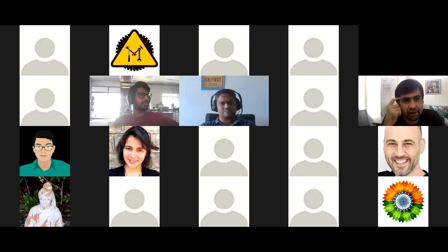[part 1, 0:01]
They could ship out is 220 volts, 50 hertz, and then they have the G threading. What threading do you guys use there? Well, there's really no standard, but plumbing is all still imperial, so anything from quarter-inch to 1 inch onwards. Imperial is still pretty much standard over here.
All right. You guys have somebody taking notes over there? I think hopefully this is being recorded. And Vaibhav, Richa, someone writing down stuff? Yeah. Oh, okay, good.
Anyway, on chat, I posted a link to the gas compressor that we have a local source for. Yeah, it's good to get local sources for sure.
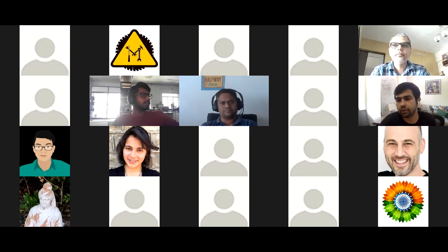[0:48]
One thing I do want to mention, we've been doing this for a while, so a lot of times people come in and try to make modifications as builders and tinker around. I'd recommend you follow the same designs we have, since anybody who has tinkered and adjusted has had some issues. Then you can modify and adjust from there. What comes up a lot is aluminum sieves versus PVC. I've run the calculations. PVC is actually cheaper, even with the labor cost of making them.
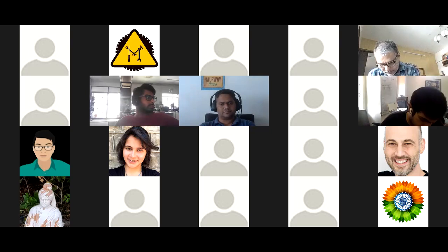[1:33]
Doing extruded aluminum takes a while, right? The adhesive that we recommend in the BOM, if you go to the Oxikit website and click on bundle, there is a downloadable BOM that has links to all of the different products. The Gorilla Glue, the adhesives are very important, so use the same exact ones that we have in there. They have a water-based adhesive. It's basically a safer style adhesive.
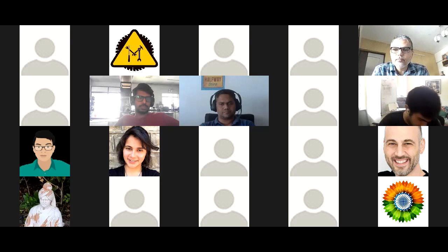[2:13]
The other thing I would mention is, when you're making the sieves, make sure that you vibrate the sieves, and I will share a link to how to make a vibrator using an old tire and a little concrete jack thing, which will help a lot. That's extremely important. You want to compact the sieves. The compression springs are also important: use 50-pound compression springs, and there's a video on how to make the components in there. I have updated the frame, and I think I posted the video in there.
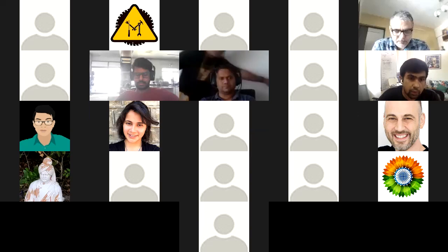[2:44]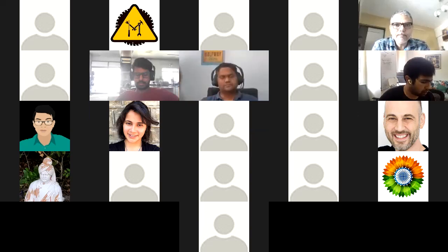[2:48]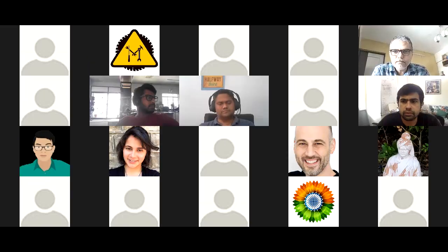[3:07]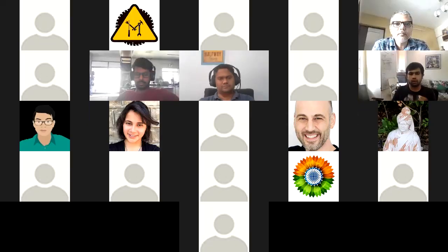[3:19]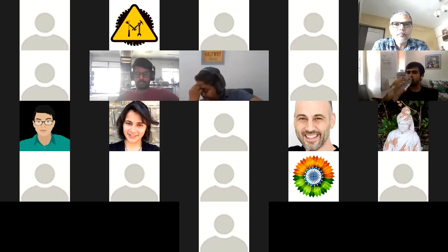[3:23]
We were using 2x2s and MDF boards in a rectangle style shape, which is easier to work with. And I need to update this. This will be a big help: we're using the Arduino Uno Rev 3 and the shield. We link to it in the BOM, and that just knocks out a ton of stuff. It'll save you like $100 in cost by using basically one relay board and the Arduino Uno, and you could load the code on there. I'll take a snapshot of the setup that we've minimized so that it's dead simple now.
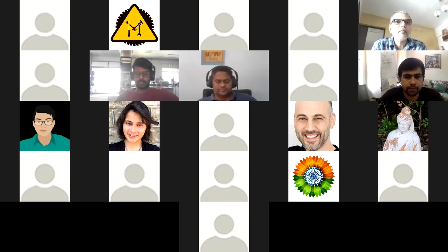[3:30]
Another thing is, people complain about the noise factor, but that's just a general complaint. The main thing is you want to have the output that performs. Leaving it as an open shell will keep the coils cooler, right? Definitely want to use the copper coils. The longer the coil you have, the cooler the air will be as it goes through the system. Let's see what else.
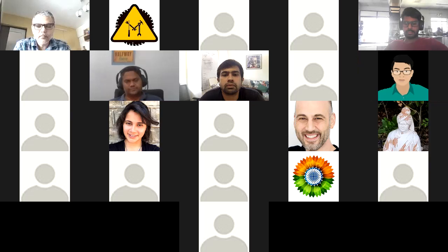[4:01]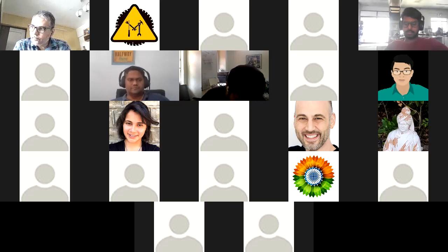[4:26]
Oh, pressure safety valve. You want to get a relief valve. Yeah, you want to get a 50 psi relief valve right before the regulator. That way you can make sure you have safety and the thing doesn't blow up, right? Even though we never had that issue, it's good to have that. Let's see, what are some other issues that have come up?
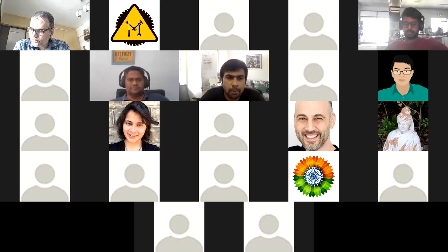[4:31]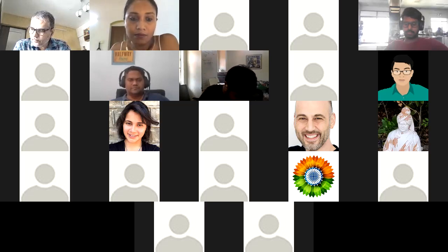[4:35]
The orifices, gosh, those are extremely important. The 1.5 millimeter orifices inside of the tubing. The reason we selected sodium over lithium zeolite was that lithium is in extremely high demand, with like 16-week lead times from all the good suppliers. Sodium still has longer lead times. We have priority shipping
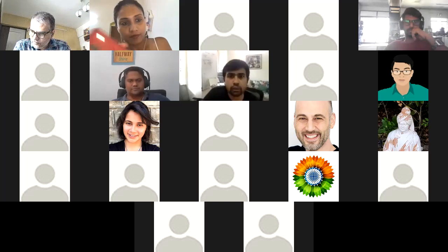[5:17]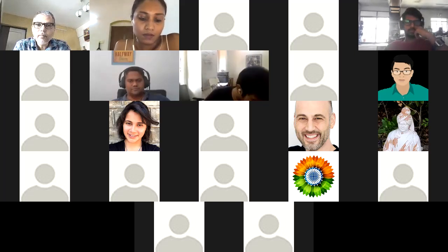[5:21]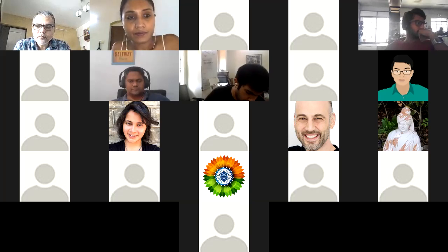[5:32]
with Honeywell as our partner in this, and they want us to handle all the orders through our system. We can ship drums as well, and we have Mylar bags that we ship the zeolite in. We use sodium because it is about 4 to 6 times cheaper and more accessible. The way we hacked it to get really good performance is we recycle some of the air. As the enriched air comes out of the sieves, we put it through what's called the halo, and we have these orifices which have a 1.5 millimeter hole inside of them.
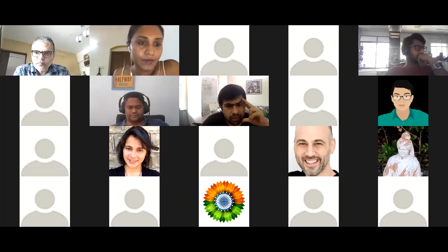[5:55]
Inside the additional tubing with the direct acting valve. And what that will do is air will come back in, it'll push back into the sieves, enriched air. So you have enriched air mixed with ambient air, 21% ambient air, and you have enriched air resulting in a second cycle of the air, allowing it to be enriched using the sodium. That's kind of the big hack that allows us to utilize sodium to do this with.
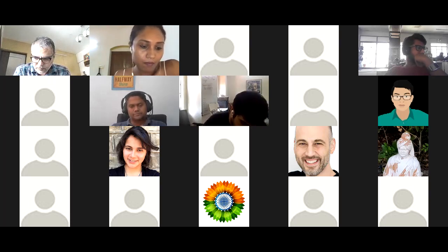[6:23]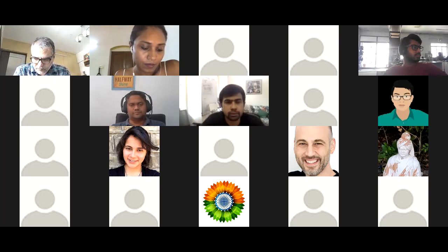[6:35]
So I strongly encourage you guys to use the sodium 13X zeolite if you can find it there. Like I said, we can ship. You guys order the bundle. I could ship it tomorrow to you guys to India. I have DHL and FedEx has given me 81 and 85% off shipping rates. So international shipping rates, so we can get stuff over to you air shipped at a lower cost.
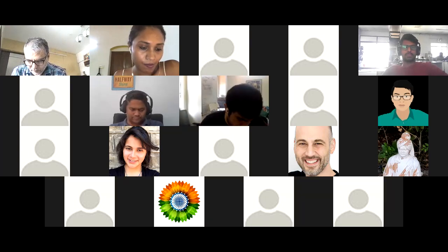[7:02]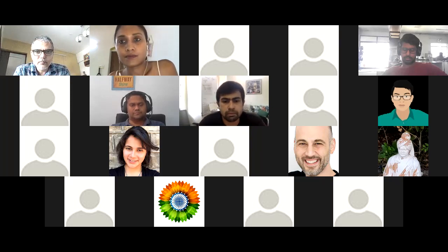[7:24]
So that'll be helpful. I think the bundle gets you like $350. That'll get you, plus the shipping costs, pretty much the majority of the core stuff that you'll need, and then you can find the compressor over there. And you'll have it this week, pretty much coming in. Because it takes a little while to source local stuff and figure out what works and doesn't work. We've done this a ton of times. And the pricing is pretty aggressive for all the items you'll need. So that's that. What questions do you guys have for me?
Okay, I have a couple. Most of the points you raised, I think we have sort of started thinking on those lines already. We ported your BOM to a spreadsheet, which is online. I posted a link. And we also linked the items that we thought were high priority in terms of, let's say, specification. So the spring, as you mentioned, the pump and so on, orifices.
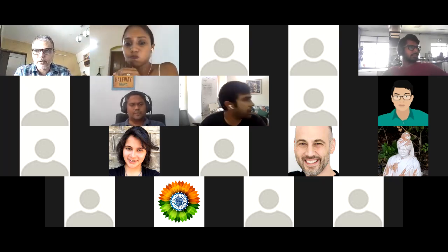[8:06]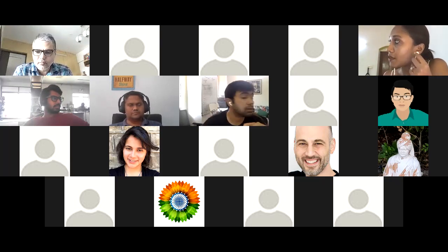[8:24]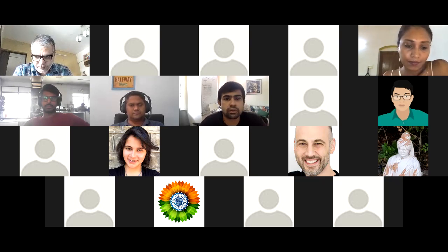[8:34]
I had one question regarding the PVC parts we've used in this. Have you had any concerns regarding outgassing from PVC because this is for medical use? Or we don't have to worry about that? You don't have to worry about that because we're using rigid PVC. Even with the flexible PVC and tubing, there's a lot of information out there. A lot of medical supplies use PVC and tubing. It's just something that kind of comes up, but it's really not an issue. You could always just source medical grade tubing. But the PVC rigid tubing, if you look that up, this was a discussion in Pillar Tribe in the past that's been squashed.
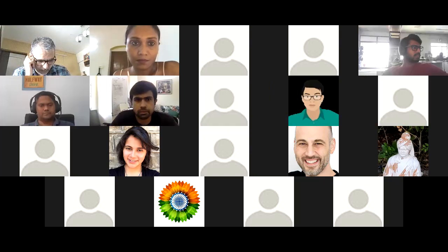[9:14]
Okay, cool. Good to hear that. Make sure you're using Schedule 80 or above PVC pipes and fittings, for the pressure. Also, when you're creating the sieves, you want to put the adhesive in the shell together and then let it dry overnight so all the fumes dissipate and go away. Then you'll put in the zeolite on top of that. And what I could do for you guys too, just to boost you, is put in the PVC parts, the little disc, the drain, and the additional fittings. I think that'll be helpful.
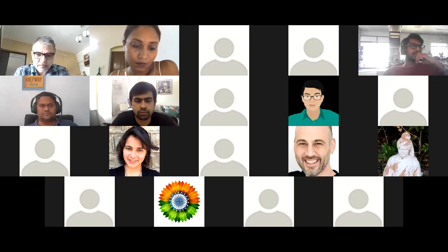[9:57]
The other question I had was, I pulled your GitHub repo, but is there a better collection of documentation? Because I didn't find anything about how to hook up the Arduino to the various solenoids and which pins go to which of these solenoids, for example. If you go to hackaday.io/Oxi Kit and then go to the project in there, there is a ton of files you could download, including more than 400 pages of industrial designs, the schematics and code. And there's also an oxygen analyzer setup that Krishna put together, a DIY deal so you can detect the oxygen levels in an inexpensive fashion to build.
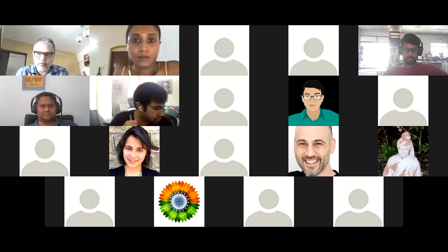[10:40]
Yeah, okay, I'm going to do that. Hackaday is kind of my territory. Also, the next question is on the analyzer part. You aren't putting an analyzer on each unit you're shipping, right? It's just to verify. Right, basically the unit we have is like a $15,000, $20,000 machine. For some reason the military even tracks where all these units are. But we did find a cool one that I just received today. I'll utilize it and report back, which is awesome because it detects oxygen flow and pressure, which is something that I want to test throughout the system. As the air flows through different parts, we can basically tap in and see what's going on in different portions of the system. Cool. Awesome.
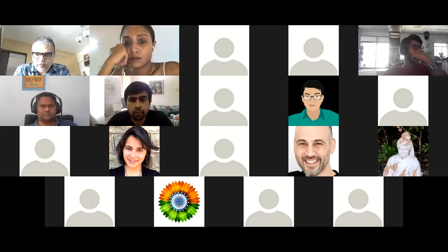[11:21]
What else? Okay, Vaibhav, I think the ball's in our court. We have to get cracking on ordering our stuff now. Yes, I'll place the order right away on your website, Maher. This is the same link that you had sent me. I'm just going to figure this out and right away make that order. The 699 bundle, right? Yeah.
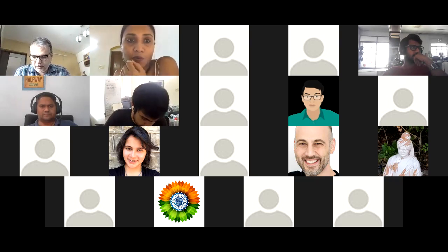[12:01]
If you get the bundle, there's the compressor, but not the cost of all the additional PVC parts. I'll send you guys a bunch of stuff. Just order the item, and because the rest of the PVC parts are not in there, that we have in inventory, I'm just placing that order in the next 15-20 minutes. Done. Awesome. Cool.
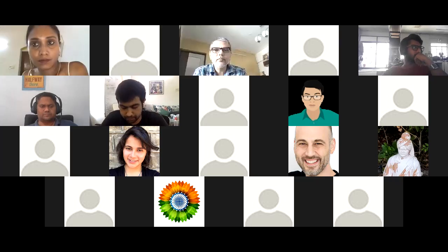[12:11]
One thing I'd like you guys to do with DHL is check with your customs. For import, you want to try to get a customs broker. I'll connect you with our senior account manager over at DHL that we'll ship with, in order to try to get all the parts through. Make sure there's no issues there with importing.
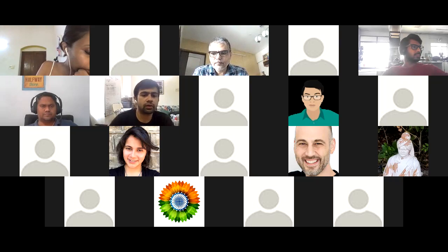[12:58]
I think a lot of the stuff is made in China, but we make this happen where it's an assembled thing. I could put made in America for a lot of parts, so that'll get through. But you basically want to make sure you have an agent on deck. If you get one today, it would be useful if you talk to DHL and show them the BOM and what's coming in. That way we can make the commercial invoice and packing slips and whatnot in line, with the harmonized codes, so that before we ship, all the documentation is ready and it'll clear customs quicker into India.
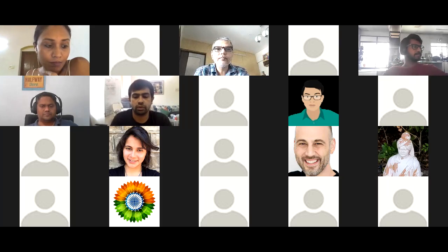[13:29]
Makes sense. If anyone has insights with DHL India, let us know. I think it would be useful to have some internal contact over there. Yep, I'll connect you guys with Colin. Who should I connect? Let me just do that right now while we're on the phone. You can connect to me, Maher. Okay. Who is Richa? All right.
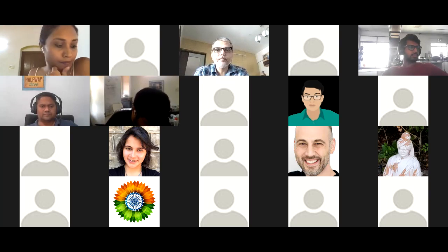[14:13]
What I'll do is add you guys in here that I have connected, and then make the group open admin so that you can add additional folks in there. I think Colin, here, I'll just put him in here. Give me a second. Yeah, this phone is going off the chain. All right, hold on a second. Okay, connect with Colin with DHL to receive the bundle to India.
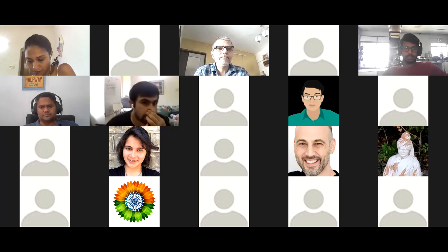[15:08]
All right. So I put Colin Williams in the Pillar Tribe WhatsApp group. He is the man to connect with. You can send him a message there or on LinkedIn. He will probably be up in a few hours. It's 2:30 a.m. here right now, and he is very helpful and will connect you with the right folks over at DHL India side. Great, that would be very helpful. Thank you.
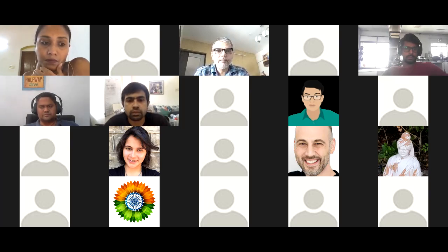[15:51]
I had a quick question, Maya. In terms of certifications and approvals of this oxygen concentrator, is there something that has happened in the US? Well, with FDA approval and things of that nature, they approve a specific manufacturing facility, right? So if you guys connect with Deepti Sharma over at LifeMech, LIFEMECH.org, they created an open source ventilator. The leads there were folks from Intel, and they got that ventilator FDA approved. Our last conversations were that they're going to look at taking the Oxikit designs and bolting it on to their application that's already FDA approved, to be the potential oxygen concentrator source for the ventilator.
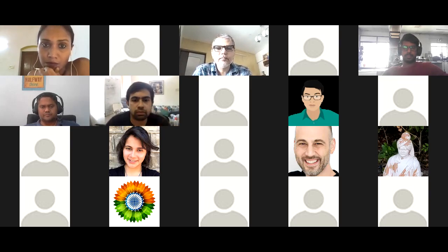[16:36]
I don't know where they're at with all that. As you guys see, there's tons of people involved in all this. So I'd say reach out to Deepti Sharma. That'd be a good question to bring up in the Tuesday meeting, Tuesday, 9 a.m. PST, 11 a.m. Central Standard Time. We have a brainstorming session with Deepti, us, and Adi, and then you guys may also want to look at the Apollo code system, which has an ML/AI code that we're working on with an ECM, I think it's called the ECM32 board.
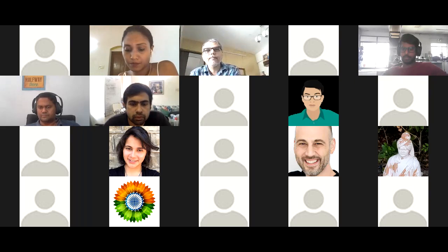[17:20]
And Adi is a principal software engineer for Microsoft, and him and a group of those guys and his team have been working with us on having that board power Oxikit to do a whole lot more functionality. Another thing we're developing right now is a self calibration. My developer Azan is putting together a design where the machine can have some oxygen sensors and run and self calibrate for the timing for the maximum output concentration level.
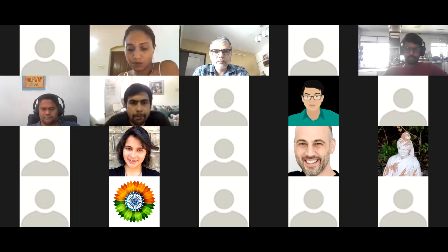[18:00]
We're also integrating with the global telehealth services. Another design that I architected allows the user to have a Bluetooth or wired pulse oximeter that can then drive the oxygen concentrator LPMs up and down depending on the O2 sat levels. The data can also go up into the cloud and connect into the global telehealth services.
So if you look up globaltelehealthservices.com, they have done some code there. I think it's in the GitHub repository for Oxikit and Apollo somewhere, and that's also advancing forward as well. So we have integrations. We're developing a system to go up into a database that can utilize APIs to connect into any telehealth remote monitoring service as well.
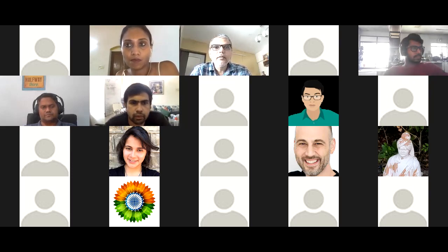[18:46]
Hey, Maher, I had a quick question, if you still have the time. Sure. Hey, so I think I missed the part where you said, did you guys try using the sodium-based zeolites, or did you majorly recommend the lithium-based zeolites? Because we do have a few local sources and the price difference is almost 4x, the sodium is way cheaper than the lithium-based zeolite. Any experience with sodium-based ones?
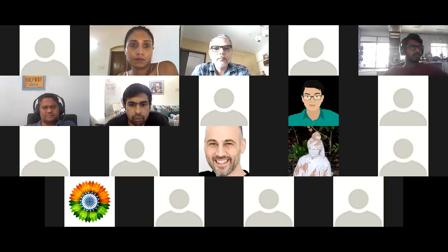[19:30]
Yes. Maybe I didn't communicate effectively earlier, but yes, we selected sodium for that specific reason. The system we currently have uses sodium zeolite because it is 4 to 6 times cheaper and more accessible, and that's where we use that recycle functionality in order to still get that 97% output by recycling some of the air, which is actually a very simple hack.
Okay. Because I was talking to the sodium zeolite guys, and he was not so bullish on whether you will get high concentration levels. He was like, lithium, it's just gonna work. But if the sodium works, and if you have figured out the recycling hack which Maher suggested, we might just as well use the sodium-based zeolite. Well, that's the way it is already configured. That's why the orifices are there. It's already configured.
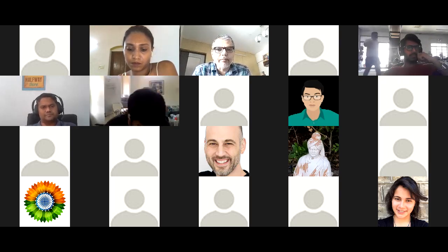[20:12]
I'll be sending you guys the orifices as part of the package. You'll be getting the orifices as well to include in there. One of the things you want to do with the orifices is, when you stick them inside of the tubes, I'll send you guys pictures of the system, how it connects. When you put them inside of the tubes, you'd want to get a little zip tie and wrap it around the orifice and the tube and tighten it up to keep it in place.
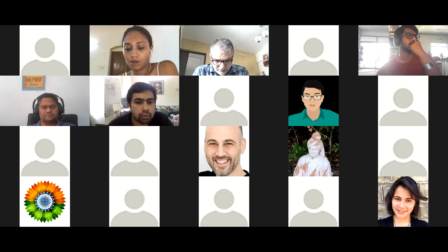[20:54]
Yeah. There's also talk of someone trying to pitch an alternate material, which I think is porous silicate. You would still strongly recommend zeolites only, right? If we have to. Yeah, sodium.
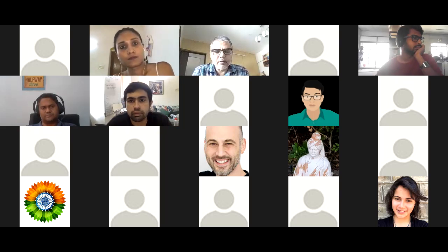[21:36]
Like I said, a lot of this has come up before many times. Guys, I've spent $500,000 to get to this point, right? So I've burned through so much stuff, gone through so many different iterations and prototypes, and I strongly encourage you to follow the system that we've developed first, and then try to modify and build on top of that. That way you guys have a win coming out, and you don't get demoralized by making some adjustments and finding it's not working.
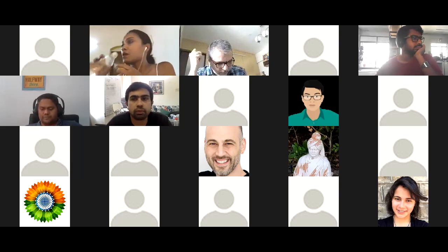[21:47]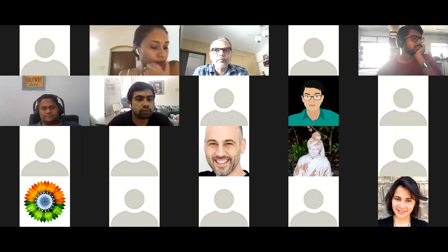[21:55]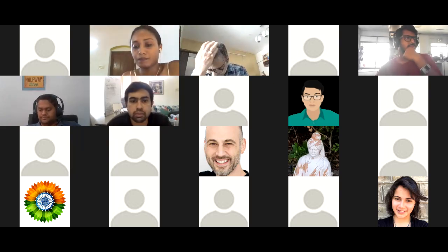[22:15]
Yeah, that was the whole purpose of setting up the fundraiser and the project both, is to get a kit from Oxikit and build it as recommended, and then see what we can do to improve things based on local materials. So we can place the sodium zeolite order. And since you'll be getting the zeolite from us to build that first machine, you could also use that as a test point for additional zeolites that you purchase over there. Once you use our zeolite, and it's high quality stuff made from Honeywell.
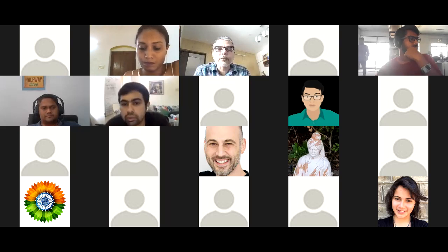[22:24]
Another question, Maher, is this zeolite a consumable, or does it last for the life of the machine? That's a great question. So the zeolite will last about 2 years. It could run kind of 24/7, a year to 2 years. One thing you do want to do is moisture and humidity control when you have the machine off.
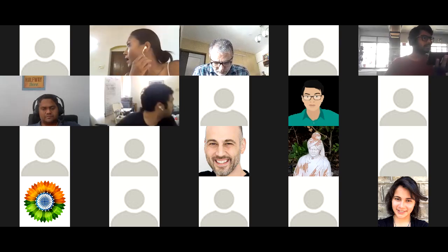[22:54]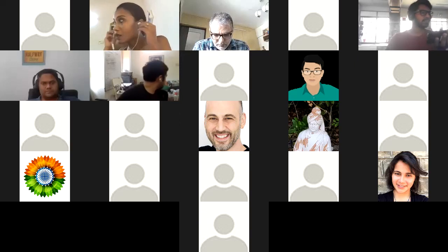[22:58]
Another little design thing I wanted to do was put in, maybe in front of the sieves, some type of small vacuum to clear out the air whenever it's being stored and not used. Definitely whenever you build the sieves, you want to close the end caps where the fittings connect, so that you don't have
humidity coming in. We're talking to UNICEF, and one of the issues they have is they'll put concentrators in storage, and one of the reasons they go bad is they're not being used, and humidity gets inside of the zeolite. So keeping the system closed whenever it's not in use is a way to conserve it. Now the zeolite will last, like I said, a very long time.
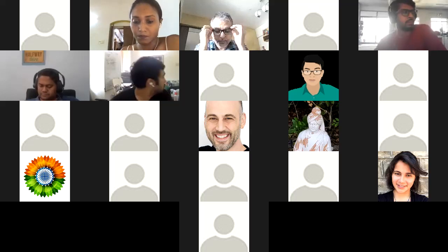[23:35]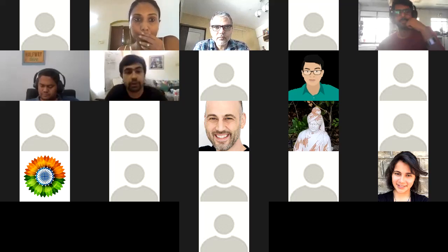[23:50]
The compressor is oilless. If you're using an oilless long duty cycle compressor, then they're built to run for thousands of hours at a time before needing maintenance. And then you just basically swap out the sieve, right? To maintain it a year from now, and every so often just check the O2 output.
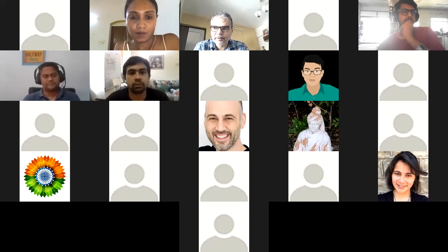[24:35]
We kind of shot for the stars and the moon, and we got NASA engineers on here, above 90%. Most of these concentrators out there, even little 5 LPMs and 10 LPMs, they'll say 90% plus, but that's really at 1, 2, 3 LPMs. When you get up to the higher numbers on the machine, it drops to the 70s and 80s, whereas our system will actually do 90% plus at 25 LPMs. So you could actually go up to the 30s. In the 30s, you're in the 80s, which is still pretty badass. Right. Okay.
Also, is there any issue with caking of the zeolite during storage, or compaction? No, inside of the drums when they come shipped to us, they basically have nitrogen inside of them. So once you've got the sieves ready, put the zeolite in and cap it off in the Mylar bags that we get. But once you're ordering additional zeolite, if you get it in drums, what you'll want to do is tap the top of the drum.
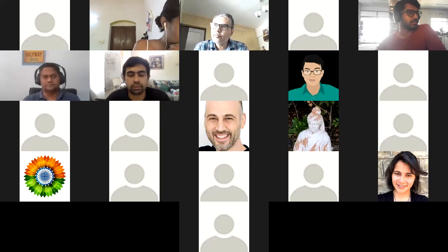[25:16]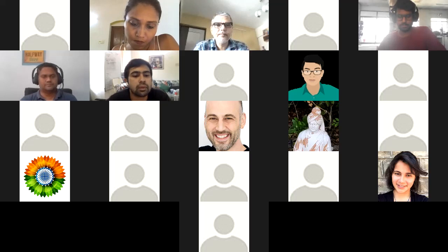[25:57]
And that top of the drum lid, here, let me just take a picture of what it is and drop it into the Telegram group, kind of what we're doing here. And so what we do is we hook it up to a nitrogen tank, right? And we have about between 1 and 2 PSI of nitrogen coming into it. Let me just take a little picture real quick. You guys can kind of see how we do this.
Okay, so I just dropped the photo into the M19 Oxikit group, and as you can see, we tap it in there with little fittings we created, and a tap out, and you can reuse that lid as you go from drum to drum. I think we got like 300 pounds of zeolite in each one of these drums, and we'll just reuse that top.
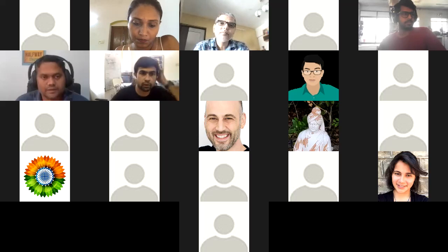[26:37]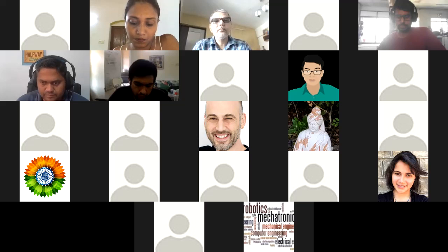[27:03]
Whenever we take another top off, we pop this top on. As long as you've got nitrogen coming in, you can put a little rubber band on the bottom where the zeolite comes out to close it, so that the nitrogen pressure pushes that open lid. Another issue is that the molecular sieve is like very fine grained sand, so it can get in between the ridges when you shut and close it, which gets a little annoying. So creating a better tap pour solution that can shut without that stuff getting caught up keeps it from expelling the nitrogen out into the open.
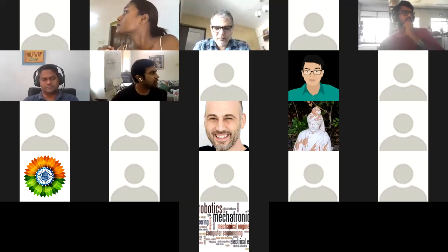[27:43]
That'll be helpful. So if you store it, it's pretty good. You could store it in other areas. Most of the manufacturers, if you know the local manufacturer, you want to ask them, do they ship the drum with the zeolite already, and do they basically have nitrogen inside of the drum in order to extend the life of the zeolite when it arrives to you guys? Okay, Praveen, we need to keep that in mind. Yeah, I'll check with them.
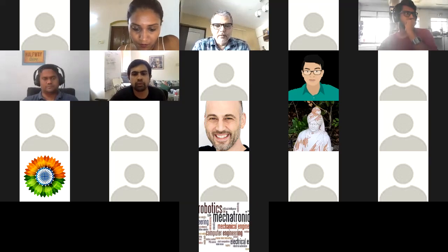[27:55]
And you also mentioned that you have some solution for vibrating the Oxikit so that the zeolite doesn't cake up inside the sieve. Yeah, let me go ahead and take a picture of this stuff and drop it in here for you guys as well. It's a very simple solution, just some tie wire and a little concrete vibrator deal. Let me see, where's that little puppy at? Here we go. It would be useful if we actually have an unbalanced compressor that itself can act as a shaker of sorts.
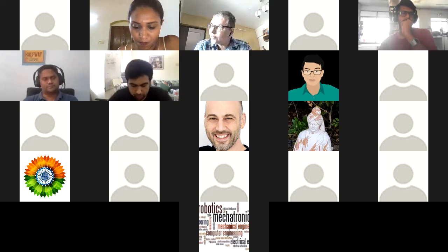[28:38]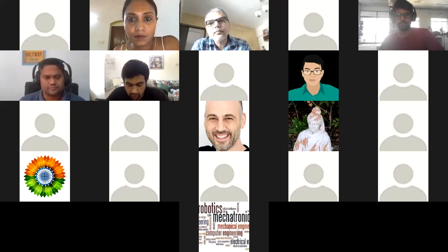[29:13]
Let's see, I'm just sending this over to you guys. So this is kind of the rig, and then there's the concrete vibrator we use. Let me try to flip this so you guys can see how very simple it is, two bolts at the bottom there. I got this off of YouTube. If I just put a DIY vibrator, okay, I think we would put DIY vibrator. I'll check it out.
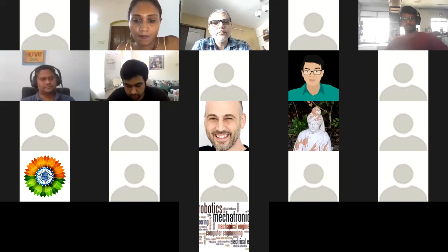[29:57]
And here, if you look at the bolts up top, you can kind of see how we did the top section, and then the tube inside of there. We oversize that square a little bit, and then you put the tube inside. You've got a 3-inch PVC pipe, and we utilize a coupling that is used to attach the PVC. We cut it, and then that goes on the outside to catch it and position it and hold it inside of that square area. Let me go ahead and flip this guy over. Give me a second. There you go. You guys see it? I mean, it's really simple, right? So I just popped in the pictures. That's all it is. It just basically catches and starts vibrating with that concrete vibrator there. Got it.
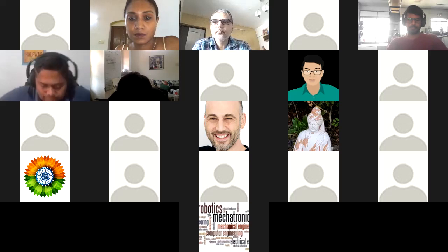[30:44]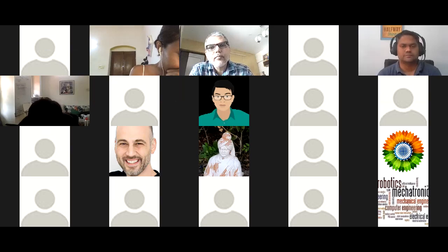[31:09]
Okay, let me drop it. Let me go ahead, while I have y'all on here, and start dropping in some pictures of the new solution, the frame. You guys could take pictures and analyze this thing from there. We're just kind of blowing and going. So this is the new layout, structure, design. I'm dropping it in here, taking different angles of it for you. I popped the sieves off of this, so there's only the surge tank on here right now. But the surge tanks will go inside, where you'll see the little loose tubing here. It just pops on back there.
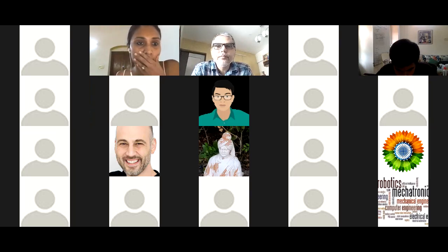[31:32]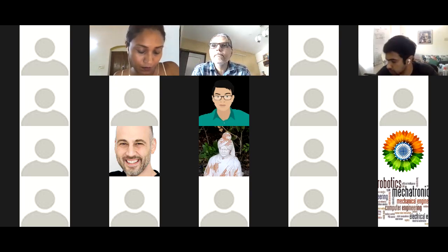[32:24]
We've got some of the valves down here at the bottom. Yeah, this is a much cleaner design than having it open. And then here I'll take a picture of the little relay board we put together, and an Arduino Uno. This is all you'll need instead of that DIN rail system. Let me go around here and pop a few more pictures for you guys. We've got the direct acting valve in here. Yeah, you'll be getting all these fittings and the valves as well. Gosh, man, this phone doesn't stop. I don't know what's going on. All right.
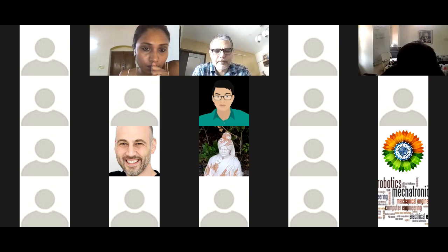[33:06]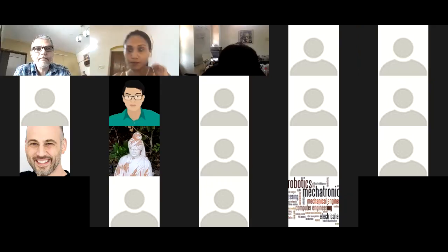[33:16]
Yeah, if you've got 300,000 cases a day, that's really with an average of 2 to 3% death rate normally, with access to oxygen. You can only imagine what's going on there in India. You've probably got numbers closer to 6-7% dying right now due to the lack of oxygen on a daily basis. Yep, it isn't a good situation here for sure. Yeah, it's pretty dire. We've been at this for a year, talking to people about this, and now it's getting taken more seriously.
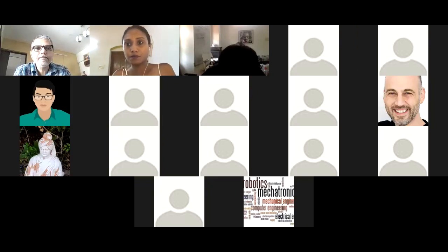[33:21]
So there you guys go. I'm taking snapshots of the new rig, so you guys could maybe zoom in. Like I said, the sieves do go at the top. You'll see the two loose hoses that go at the top, and then the cylinder valves at the bottom are where they attach over to the bottom of the sieves.
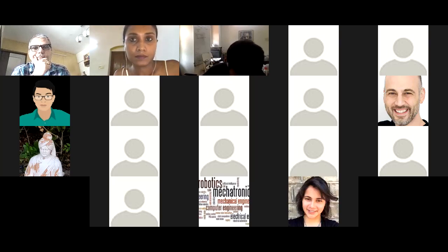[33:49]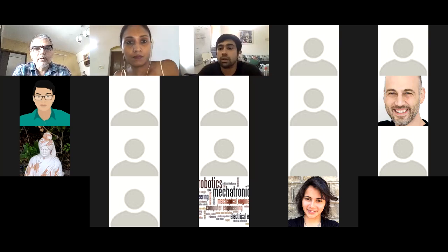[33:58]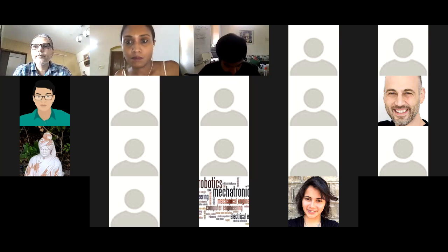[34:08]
Okay. And then the instructions on how to build everything else are in the YouTube playlist. All right, that's kind of helpful. Are there any more questions? I've also gone ahead and placed the order. It's order number 140. You should have it.
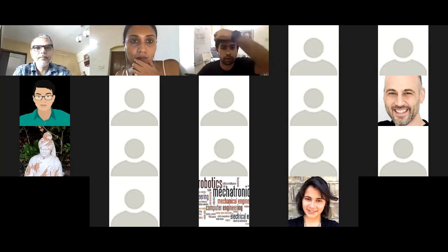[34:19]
Great. We'll get it put together there and send it out to you guys. Let me know. Yes, put that together. Yeah.
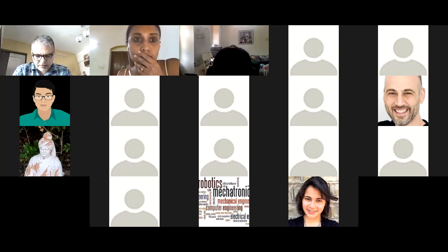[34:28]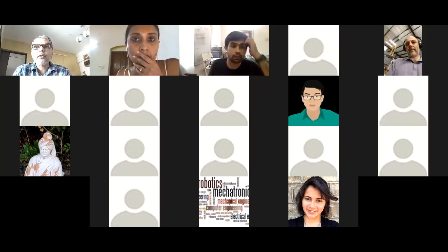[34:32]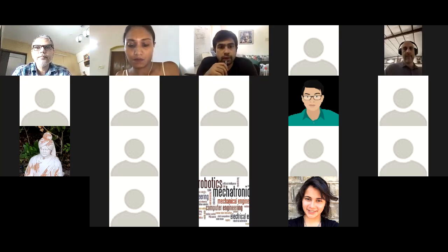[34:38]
Okay, and I think sometime today or tomorrow, Vaibhav and the rest of the folks are heading out to buy the local stuff. So we'll have an insight on that soon enough, I guess. Yeah, today we head out shopping to find as many things as we can. And you guys said you are recording this, right? The call today, yes. All right, so here, I'm just gonna run through this to help you guys out real quick, okay? All right, here we go.
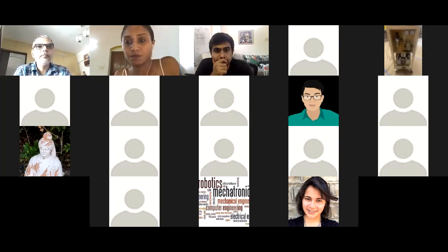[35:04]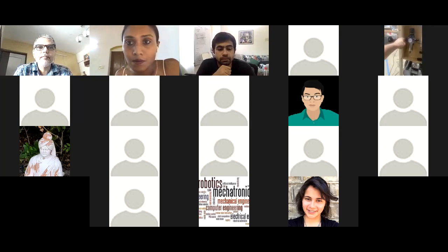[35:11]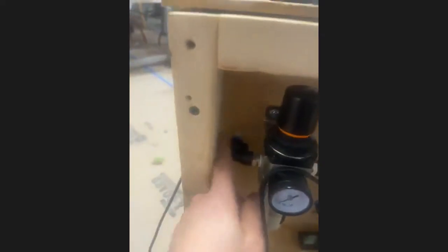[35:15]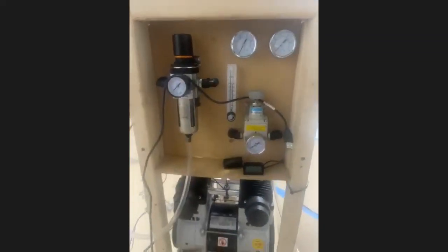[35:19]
Let me go ahead and flip my video. I'll walk you through some of this system here. So can you guys see it? Yep. All right, here we go. So we have a high pressure regulator here. This is an elbow. You'll get these fittings. These are push-to-lock fittings. I believe these are 3/8 to 3/8 connections. You have a 30 LPM flow meter here.
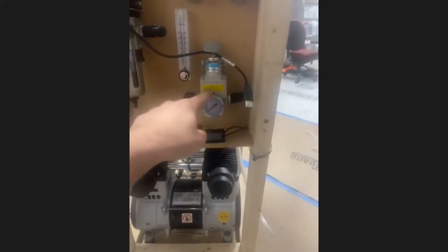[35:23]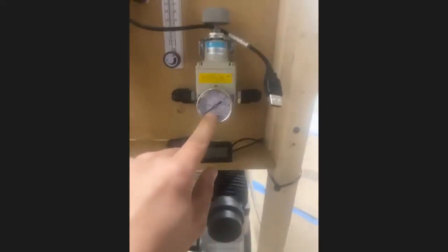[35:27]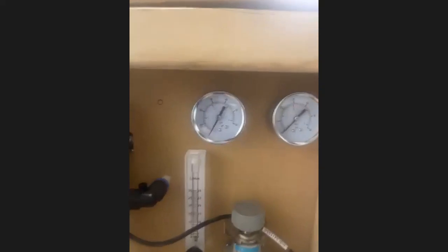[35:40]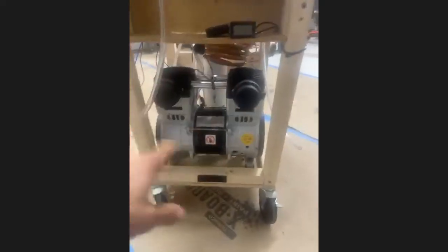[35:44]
This here is another regulator on the output side to the surge tank. It's important that you basically have this under 4 PSI. We got it down to pretty much 1. The lower you have, the better, so that you don't have flow back and forth to the surge tank. This will control that. Here's your valve to check for the sieve pressures, right? Here is our concentrator hookup. We have air coming in from here.
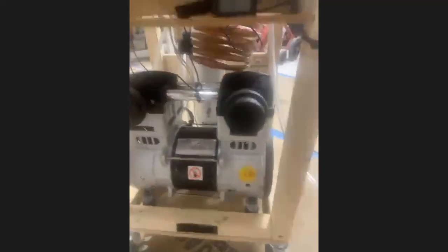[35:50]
There were some filters. One of the things we did was we put these temperature gauges on the head of the compressor, if you get some of that, and then also attached it to the coil, right, to detect the temperature as it comes in. These are all 3/8 tubing. So here you have a 3/8 to 3/8, and then this coupling goes into the valves there. Here is the halo that I'm talking about. Here are the orifices, right? We call this the halo.
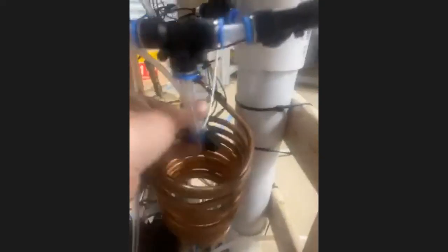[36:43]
So the surge tank, the air comes out of here, it goes into this T, and then from there, these are all 5 inches. It goes through the orifice, which will push half the air in here, and pushing air back into the sieve. Air will come out from here, and here's where you have the direct acting valve that's controlled by the Arduino board. So that's the configuration of what we call the halo unit.
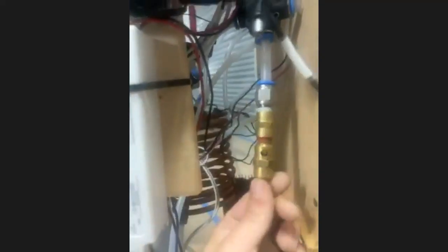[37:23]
I'll just walk around so you guys can check it out. So from the compressor, the air will come out of the output directly into the coil there. That's a 1/2 inch hole that's coming into a 3/8, loops up around, goes into the regulator. As you can see, there's a T over here. There's a T right here. There's the pressure relief valve there. It goes in through here, comes out the other side, which is this tube here. It'll then come down into a Y, which will then go down into the 2 solenoid valves, and then this here will plug into the sieve, right?
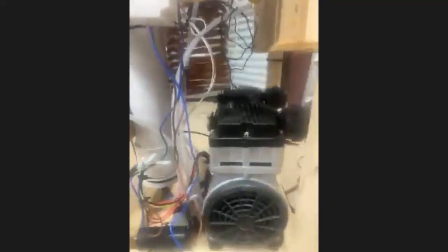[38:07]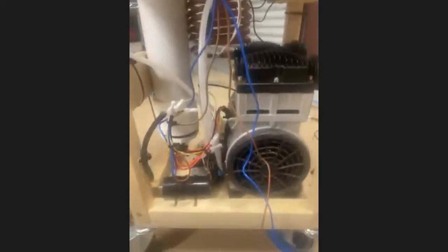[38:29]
And then we got some fans up here that we're fiddling around with, and some foam that connects into the power. We have a power supply source for that that we're toying with. And that's pretty much it. I mean, it's pretty simple, right? We simplified it down as much as we can. Another thing we want to do is play around with the rubber feet it comes with. What you want to probably do is put springs on here.
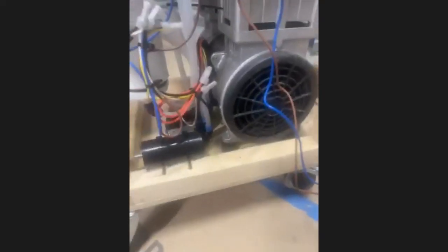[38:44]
We're going to be wanting to put some springs on there so that the vibration of the system is minimized. These little connectors work well. As far as a simple DIY model, I was going to take this and rebuild it in a new frame and make it a little bit cleaner. Actually, tonight.
Another thing is you'll have the output here, the water. Here you have where the condensation will come out of. You just want to make sure you've got a place to position it there. Hopefully that little video helps you get a look around it. You could pause the video and take a look at the different components in here. If you have any questions, let us know.
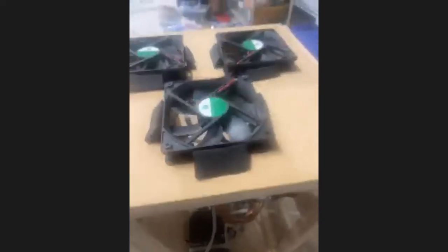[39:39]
I know that those are 3/8 down there. These are, I believe, 3/8 to 1/4 inch. The specs will specify what exactly they are. There's a little configuration right now. I know it's a little all over the place, but like I said, I'll clean it up and get that over to you guys as well. Tie straps are great. We just use those to tie in everything. Let me see if I can show you guys.
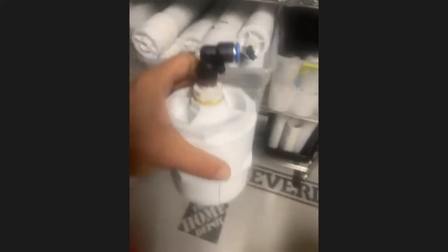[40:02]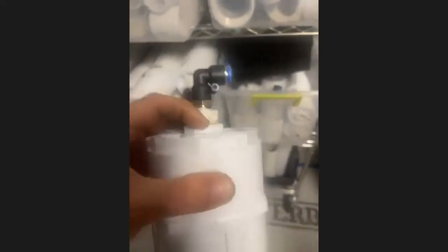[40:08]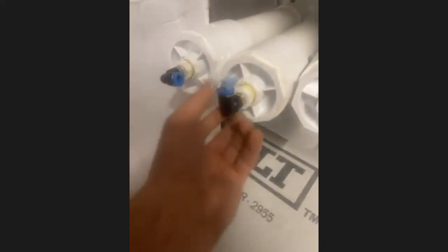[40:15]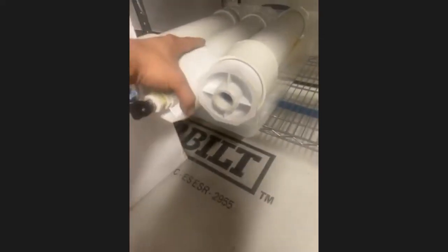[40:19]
Here's all of our sieve components over here. Building some here. Like here, we attach one here. You use some thread glue. You want to put this on the day before you put the zeolite in. Here we cap off the tips. This is what I'm talking about here. You want to cap off the tips because this has zeolite inside of it, right?
So I'll be sending you guys the parts you'll need to make the sieves and the little fittings, so you have everything that you need. We've got all the inventory here. Awesome. Thanks for doing that. Any other questions, gentlemen, ladies? No, I'm pretty clear. Just waiting to get the parts on hand so we can start building it.
Okay, nice. Other resources, I'd say definitely reach out to Adi. He's been very helpful leading the Apollo team there. Any questions you can post inside the Pillow Tribe groups. It is an open source project. I would ask if you guys could sign up on hackaday.io, the Oxikit project. The Hackaday leadership team has us doing a Hackaday chat session that you want to mark your calendars for, which is May 5th at 12 p.m. PST. That's that session.
And then of course we've got the session coming up Tuesday, I guess tomorrow, where we have a lot of different alliance partners coming in. OSMS.org is another group that has been tracking a variety of different COVID projects. They have 75,000 members on the Facebook page. Angela Forbes is the medical director over there. She's probably going to be flying in here to Houston, and we're going to be working together on some streaming projects. She's another good resource to connect with in the group.
Who else are some good folks? Ben Coombs is another one that's built some stuff. Krupa Srinivas is another awesome resource. She also built hers, and Ben, I forget his last name, built Oxikit here in the United States as well. Gosh, this thing's been built all over the world. If you can go into the Hackaday page and start loading up your work and driving more traffic there, we'd like that to be the central communication public depository for moving this project forward.
One of the reasons I waited for posting it up there was I wanted to give everybody a head start into the solution. So you're starting off almost at the end to really take it up a notch, because when you're doing open source, people get burnt out over time. Having this starting point allows us all to really innovate and kick butt, especially with the automation that we're doing.
Once you get the system rolling, one thing we could use some help with, and this is just testing, where it's 1/1000th of a second off, is the timing. You could log into the Arduino panel while it's running. I'll go in there and adjust the timing parameters to get that magic timing that'll work. It's really a lot of trial and error. That's why we're creating this automation algorithm to catch those points for those machines.
You're very welcome. One thing I would recommend you do, especially if you get a 270 LPM machine, remember it's the higher the PSI, the lower the output. So you want to ask them, what is the LPM output at 2 bar that the compressor puts out? And we had 270. So we hit at 170, we hit the 15 LPM, attaches 270, hit 25 LPM.
Talking to my engineer, we could actually, according to the sizes we have, I'll be sending you guys, in that bundle, 10 pounds of zeolite. 3.3 pounds is utilized in every sieve, but you could actually probably use the 5 pounds if you extend the sieve by about 3 to 4 inches and put more zeolite in. And if you got that powerful compressor, then it could actually produce even better.
That's just something we kind of got to in the last month or so, once we got this kick-ass 270 LPM compressor. I actually got a 300 LPM custom one being made right now that we're going to be testing. We think we could probably get up to 40 with that machine.
Oh, another big one. This is very important. On the output, you do want to have a humidifier, all right? And I'll pop this inline filter for you guys. You want a humidifier in the system before it goes into the mask. The reason being, you don't want dry air going into the lungs at the bottom. It'll dry it out. So you do want to have humidified air.
You put the output, your little bubbler, which I'll send to you guys. And then we have, where's that little bubbler? Over here somewhere. It's like a bubbler like this. Yeah, most hospitals already have it, but it's good to have one on this as well. Yeah, and then having the inline HEPA filter is very helpful as well. It'll be a new kit in your bundle when we send it over.
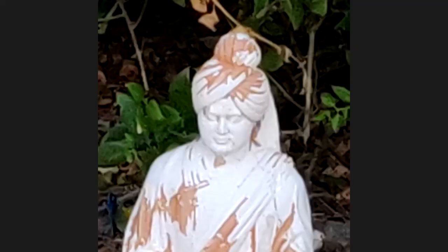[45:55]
Alrighty, that's awesome. All excited. So Anul, I just had one question, which was for Maher, obviously. Is the kit that you made in the USA, what kind of relative humidity are you talking about? Because in the next month or so, we're going to have very, very high levels of humidity in India.
Sure. Houston is extremely humid. I mean, we're talking about 90% plus humidity. We ran the machine inside of a hot, humid garage for 20 days, 24/7. Okay, good. So that's about what we'll expect in India, except slightly higher humidity. Yeah, but that's okay. So long as that machine is running, it's not an issue.
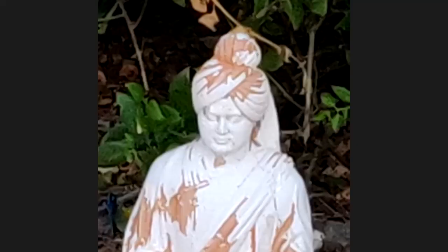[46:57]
As long as you cap it, make sure that if you somehow cap the hoses before the sieve and top and bottom whenever you're storing it and not utilizing it, to keep the humidity out. If you got air running through it all the time, then that's not an issue. It's usually whenever you store it, so it doesn't damage the zeolite. No, the humidity. I mean, if you get moisture inside of the sieves, that's not a good thing, right?
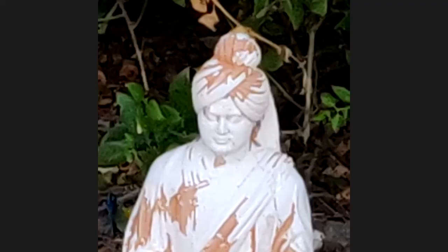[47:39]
So we overpacked it. So the input, the first part, is kind of like a sacrificial layer of zeolite. Some others use different alumina, like a desiccant, but might as well just put zeolite at the bottom as the sacrificial layer. And you will notice once it runs, you will have some condensation on the outside. However, we were able to run it for 20 days, 24/7, and still produce those results. That's great. I was worried about that.
Yep. Because we basically put more zeolite in it. A lot of the systems out there are getting very efficient with smaller sizes. With the need in the world right now, just overpack it a little bit more, over-engineer it, and that solves a lot of problems. Yeah, yeah.
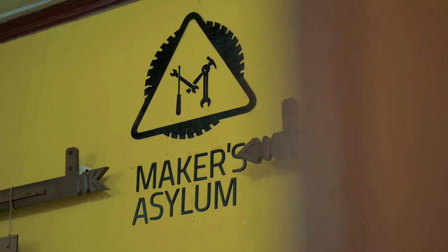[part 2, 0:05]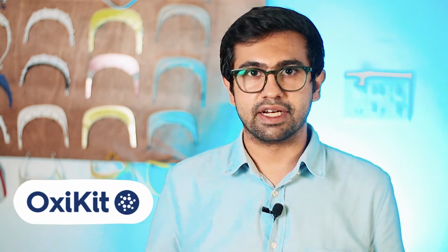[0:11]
Why we're now making oxygen concentrators in India? For the past few days, we've been procuring parts to be able to prototype these oxygen concentrators in India to mitigate this problem. The concentrator that we're working on is based on the US-based design called the OxiKit that produces 25 liters per minute flow rate at 92% purity of oxygen.
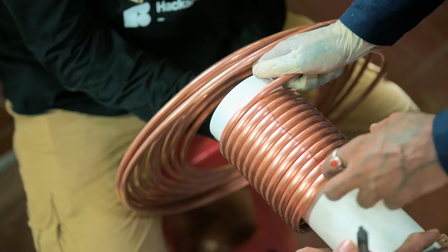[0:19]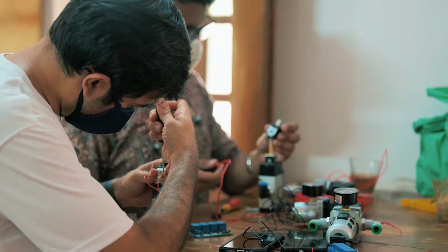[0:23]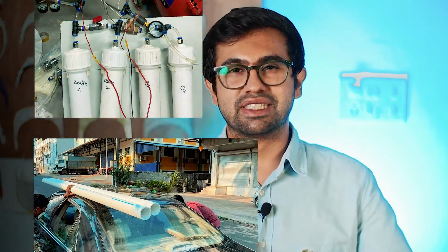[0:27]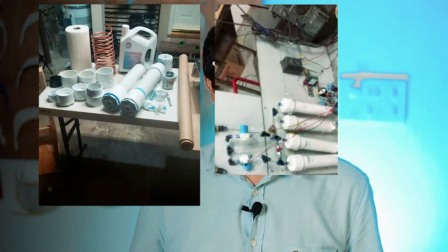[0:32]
Our challenge is to be able to take this design and make it using locally available parts and re-engineer it for the local environment in India. We're working with makers across the country in various cities, towns, and villages to be able to scale the design via distributed manufacturing in a decentralized manner. This is not the first time we're doing this.
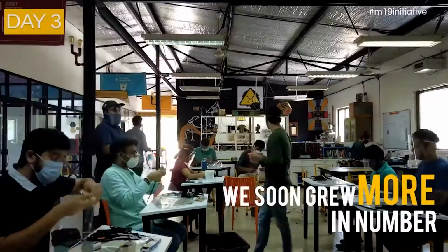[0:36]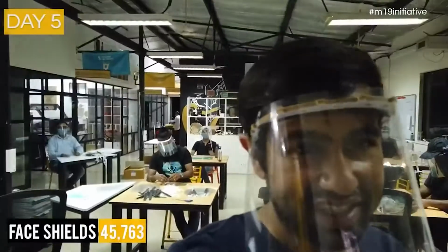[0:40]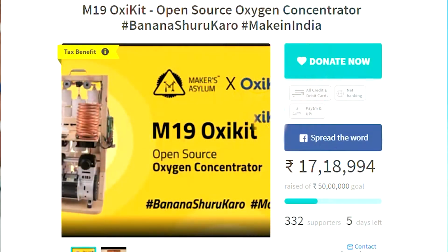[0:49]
We did this exact same thing last year when we were working on face shields, where we were able to produce over a million face shields in a matter of 49 days via distributing the designs and manufacturing them in over 42 cities, towns, and villages across India. Thank you once again to all of you who supported this initiative and made this possible.
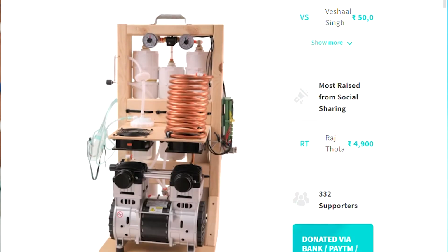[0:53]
We already have over 20 labs joining from across the country, and we are pushing hard and fast. The next couple of steps for the next few phases are as follows. All of us are currently prototyping and documenting these in local languages so that we can easily disseminate the information all across the country. Step two of the plan is to activate all the 29 states in India, that is 29 hubs across India, working on this together, and together we can make this in India.
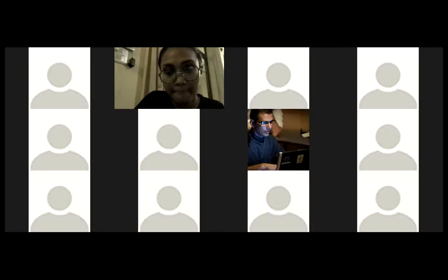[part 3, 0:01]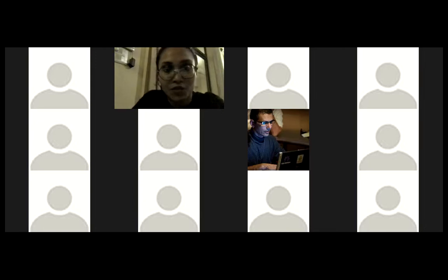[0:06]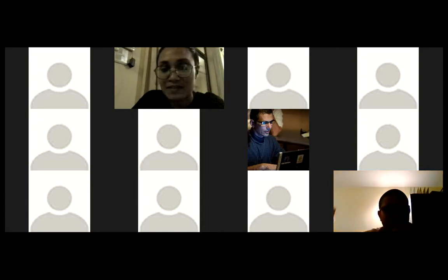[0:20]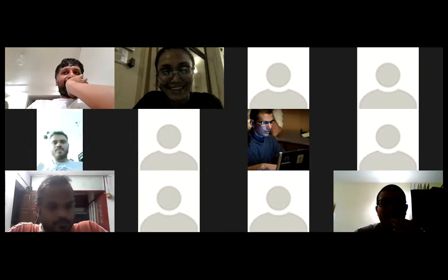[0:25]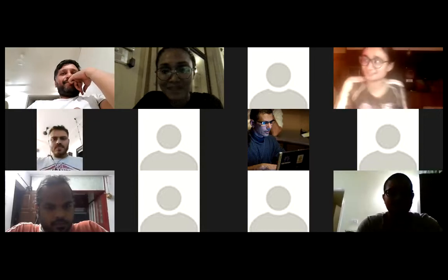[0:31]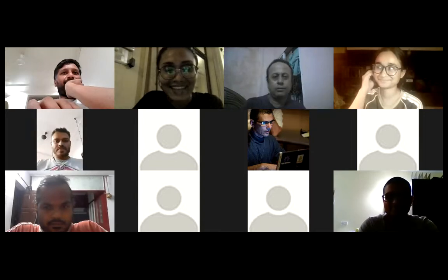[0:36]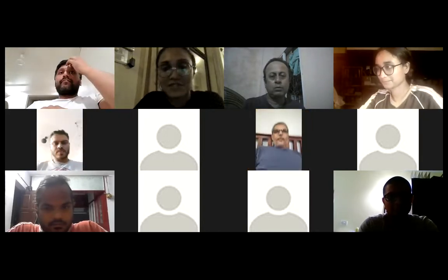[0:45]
Okay, hi everyone. Thank you for joining. I've been asked to also ask everyone to switch on their videos if you can for a little bit, just before we dive into the larger conversation. So if you would like to say hi, switch on your video, please do that. Hi. Hi. Okay, good. Good to see faces. Hi, hi. Hi, thank you for joining. Dipesh, Abhimanyu, Sanket, Krishna, if you could also please say hi, it would be great. But nonetheless, hi, Anul.
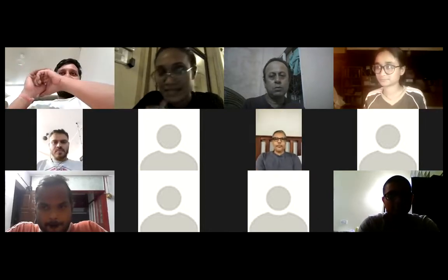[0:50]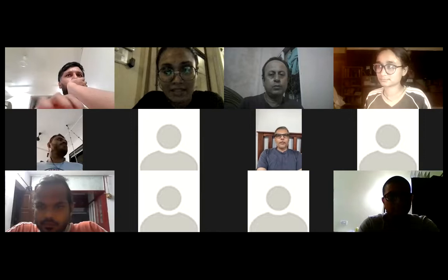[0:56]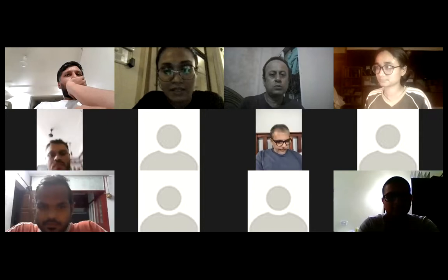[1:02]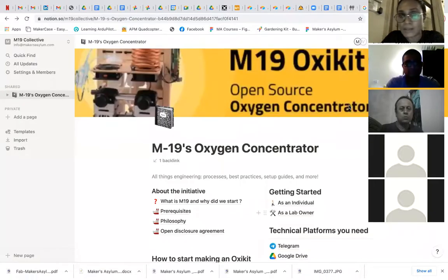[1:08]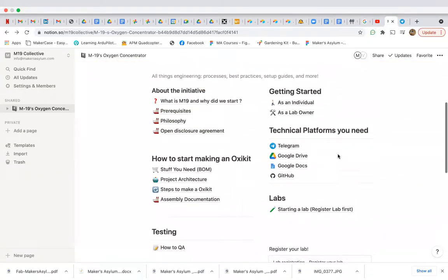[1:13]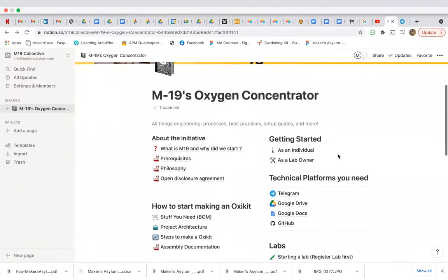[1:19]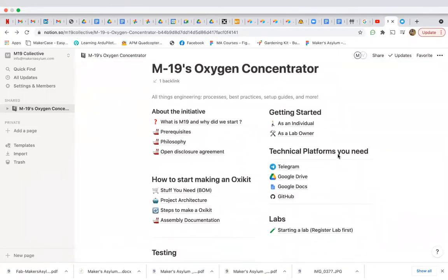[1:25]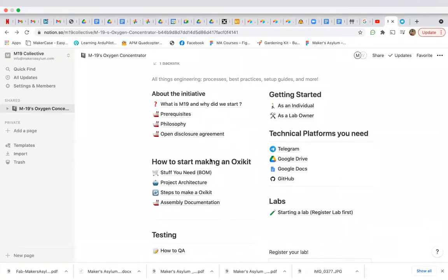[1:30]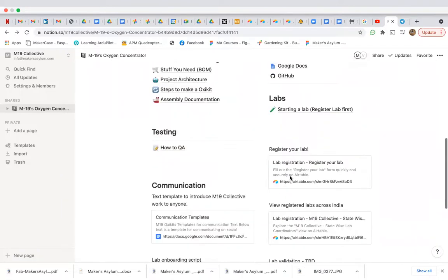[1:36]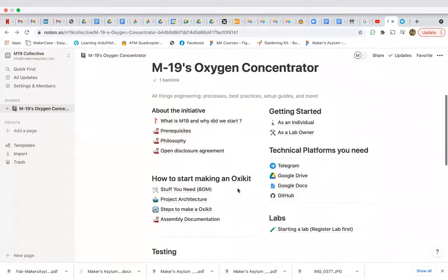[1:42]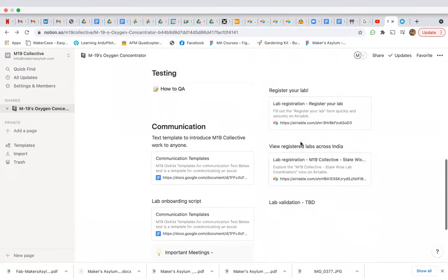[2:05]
Okay, just to give a quick update from at least my side. I'm just going to share my screen for some of the things that we've been working on in parallel for the communication to be on track. I think Ashish, Bhanu, both of you are here. So we're putting together a quick view on Notion, like a starter kit. This will be linked to the website and also to everyone who's on the group, where we're putting together a couple of basic prerequisites, things that you will need, certain documentation, and some platforms in place. We are populating it as we go along, but these are a couple of templates we're putting down over here so that if anybody comes in, they can get started pretty quickly. Because while there's GitHub for the technical repository and Telegram for regular conversations, we're trying to put at least one central layout for everyone's visibility into all the work that is happening in the back end, for everyone who's new and who's joined in.
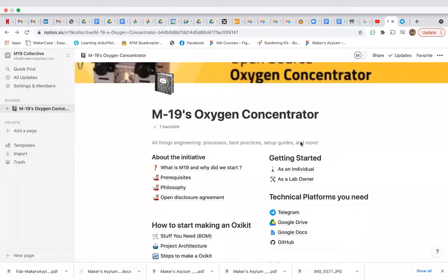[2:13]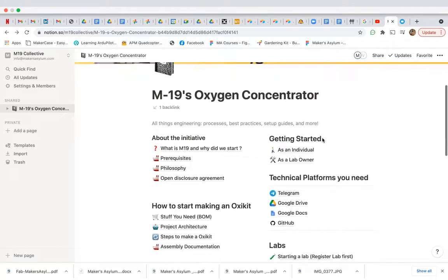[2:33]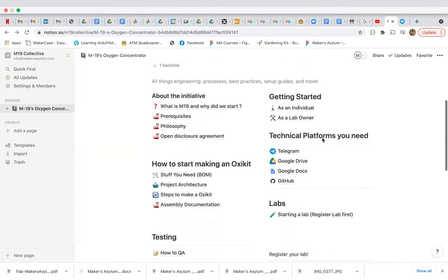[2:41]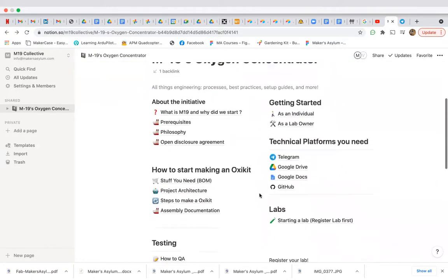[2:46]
It's been just over a week since we started all this. When we started the initiative, at least for the oxygen concentrator at the moment, a lot of interest has been there on the ground. We have a lot of registrations for labs and individuals. I think over 100 labs have registered at the moment, and we are in the process of validating them as well. At the same time, there are over 500 individuals registered to help out as part of the M19 initiative, which is pretty fantastic. But what we're trying to do is organize some of our communication here, and hopefully we should be able to share this very soon.
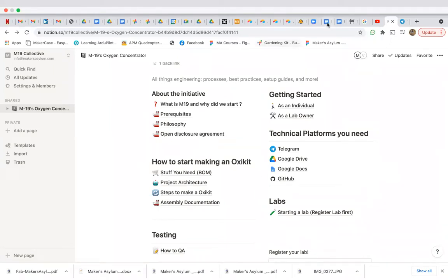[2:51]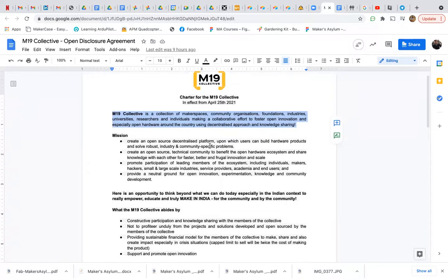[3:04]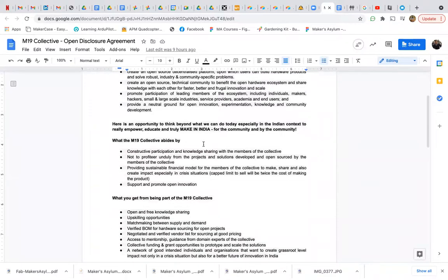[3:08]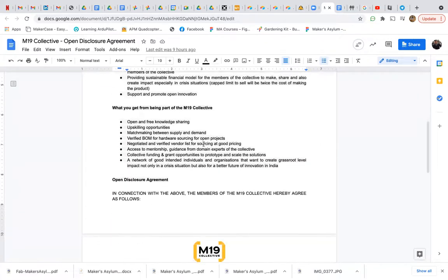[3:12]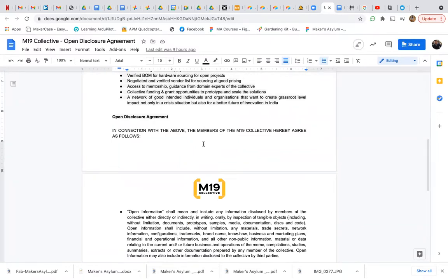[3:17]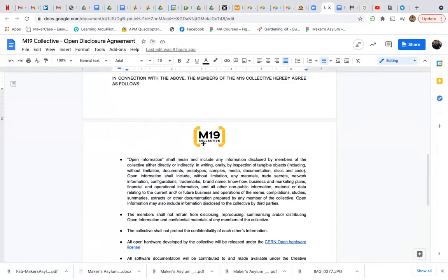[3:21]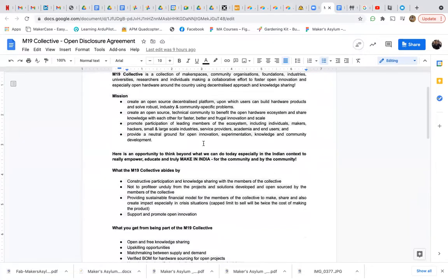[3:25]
We've also put a quick charter in place for the collective, and I'm going to send this to everyone to use as well. We also have a little logo for the collective that we've designed. And this is a quick charter about the vision, why we are doing this, why you should be part of it, and an open disclosure agreement, because this is all open source. We want everyone to take a look at this and share with each other, and grow the collective, not only for the problem at hand, but for many others that we can all collectively solve together. So that's what we've been doing on the back end as well. Weber wants to say something, so I'm going to stop. Do you want to say something?
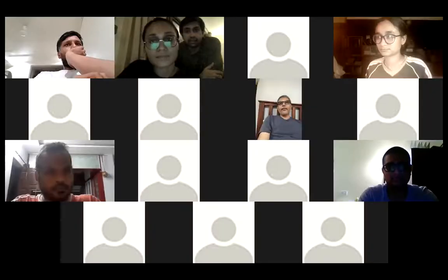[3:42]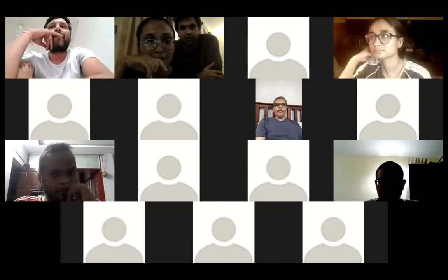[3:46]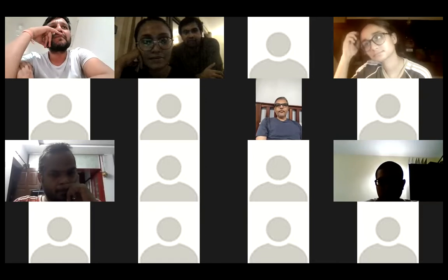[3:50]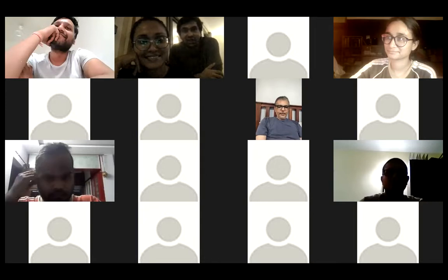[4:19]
No, I think this is what Richa shared over here, the charter. I think it's very important because that's the philosophy of the collective. It's a collective effort towards solving not just one problem, but many. What we've done is take an NDA and make it an open disclosure agreement, because we would like everyone that is part of this collective, while they are taking from this community, to also give back to the community by sharing what they're doing. That is a very important philosophy of the collective: take everything, it's all free knowledge, but if you end up making something beyond, please do share back so that the collective can grow together and everyone benefits.
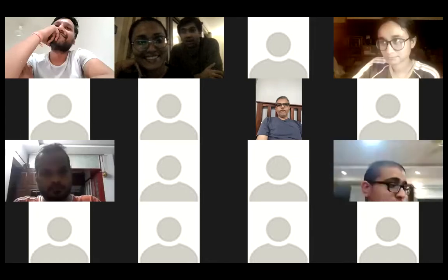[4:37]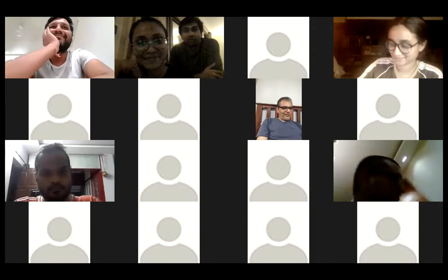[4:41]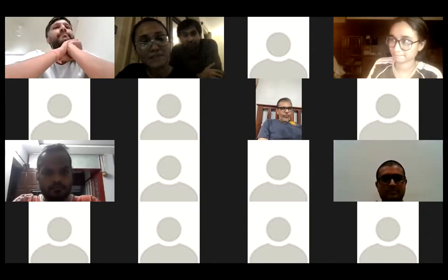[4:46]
The ODA also says that you can go ahead and commercialize the products. However, there is a clause against profiteering, at a cap of 2x the price of the bill of materials. So yes, making profits is not a bad thing, and that's a really important thing for this collective to grow. But however,
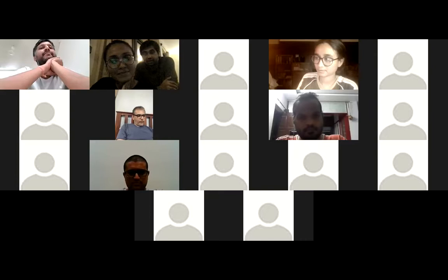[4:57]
just to make sure that it's just not completely. One second, let me just switch the Wi-Fi.
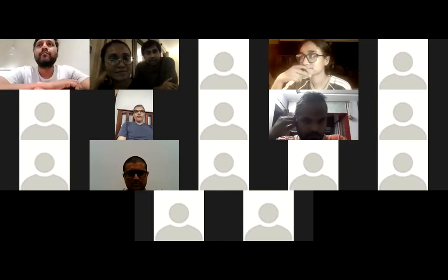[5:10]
Sorry, but just from that aspect, that everyone is fair towards each other, that's the thought of this collective.
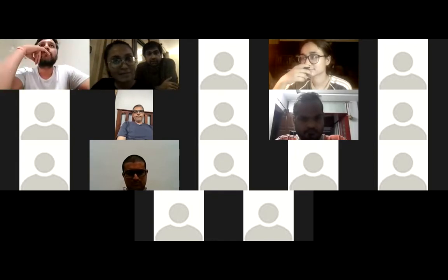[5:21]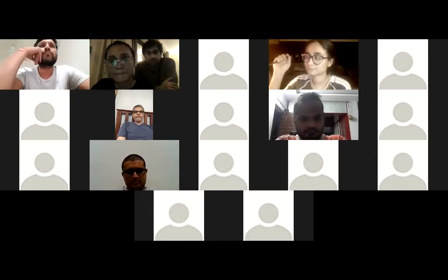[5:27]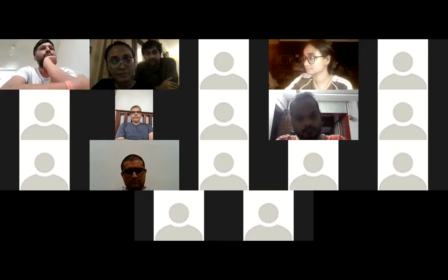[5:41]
That's about it. Back to Richa. And then tomorrow, I guess with Anul, we're planning to have the engineering call, which is going to be more in depth as to the engineering side of things. If you have any questions in terms of the device, we will also try and demo the device to you, the one that we've made using all Indian parts at Goa. I believe there are 7 devices currently in their testing stages across the country, 7 to 8. So we can actually show all of them off and try and understand what the issues are and how we can improve and build them together.
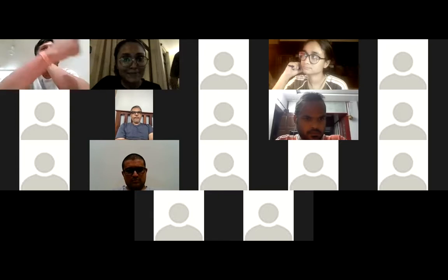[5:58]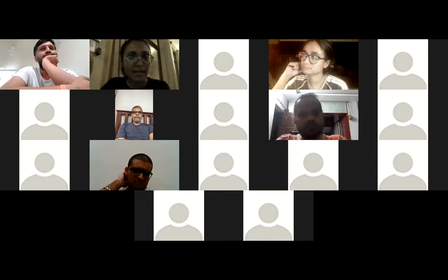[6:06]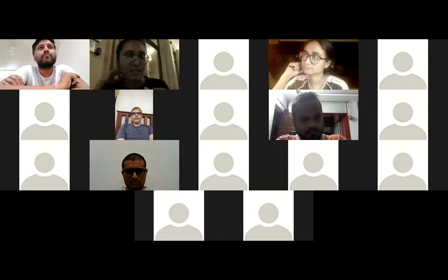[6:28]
Just before I finish and pass it along to everyone else, a couple of things that we've put in order. One, I will be sharing the charter, the notion, how you organize, how you get started, all of that with everybody soon. Everyone's been working; Bhanu, Ashish, and Vijay are also working on a larger level of documentation for the modified version that we've made in Goa, with certain engineering considerations, which Anul will talk about tomorrow on the engineering call. So all of that is put together so that it's easy to access.
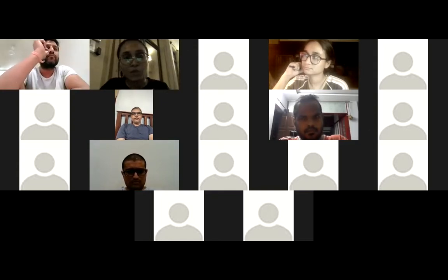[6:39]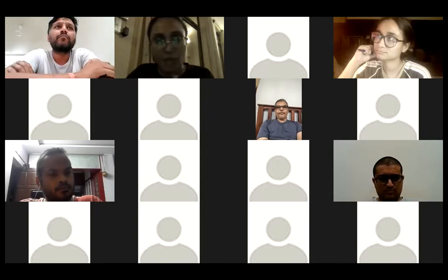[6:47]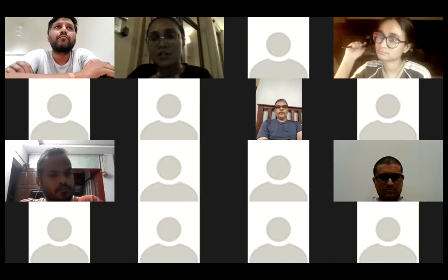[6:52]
One more thing we're doing is verifying all the labs registered. We will run a quick check about what skills you have. Do you have any gaps? Do you have access to the tools? What do you need to get started? That way we are at least helping each other out from a matchmaking perspective as well.
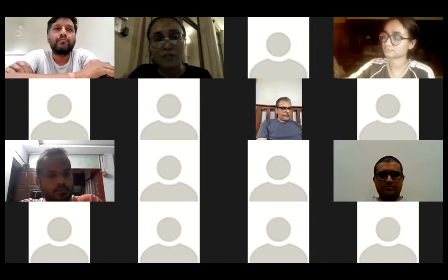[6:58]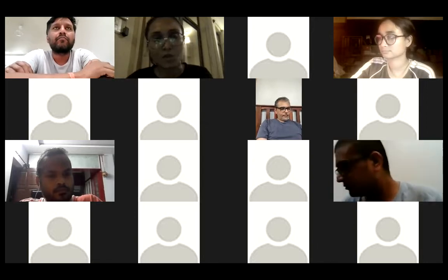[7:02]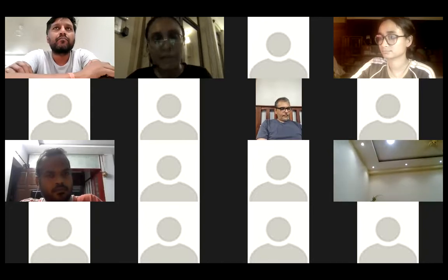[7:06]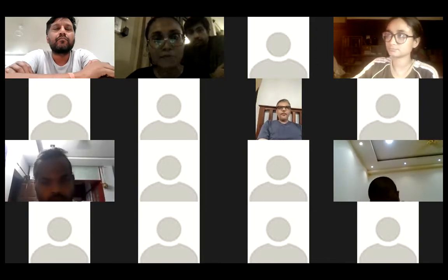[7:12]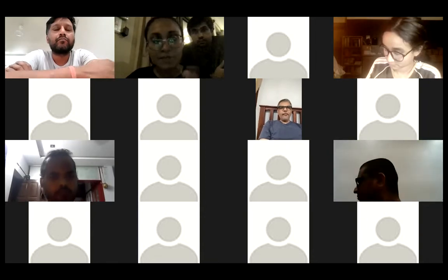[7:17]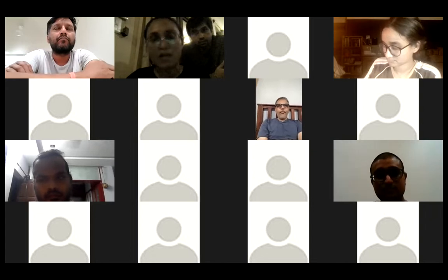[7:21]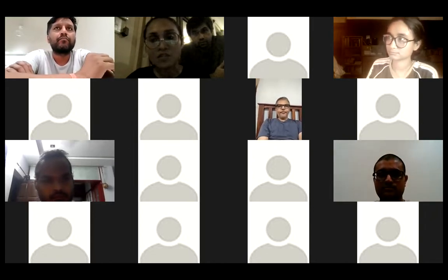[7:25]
In terms of the fundraising, while we have the fundraiser on, we're also getting a lot of partners on board to hopefully fundraise. The only place where we've slowed down a little bit is because we want to test out the first and advanced prototypes before we go ahead and start disseminating more funds to everybody else, because we all have to be super confident before we go deeper into this. So the fundraiser is on.
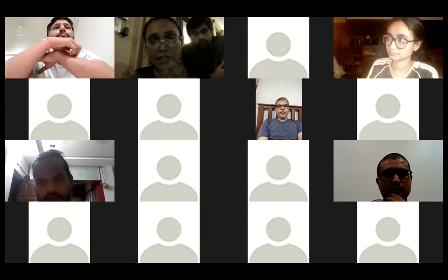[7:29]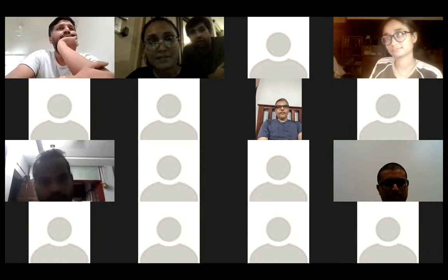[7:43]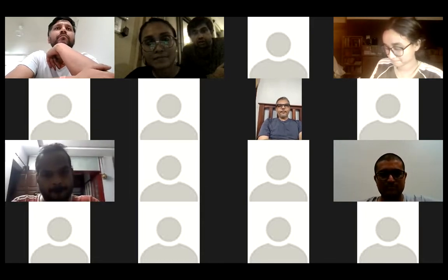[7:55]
We are in conversation, at least from my perspective, with a lot of really great folks who want to be part of the initiative, large foundations who've really, well, today Fab Foundation signed the agreement, so that's a very good one. We've got Professor Neil and Sherry on board, and they're supporting us in every way. We believe that tomorrow we'll also have an engineering call with Professor Neil to discuss the shortcomings and the ways to overcome them in terms of the designs and make them stronger and better.
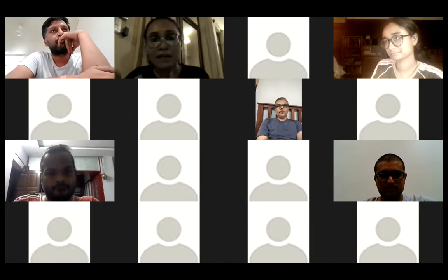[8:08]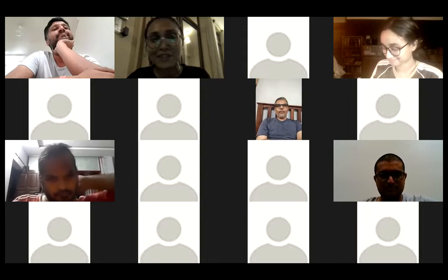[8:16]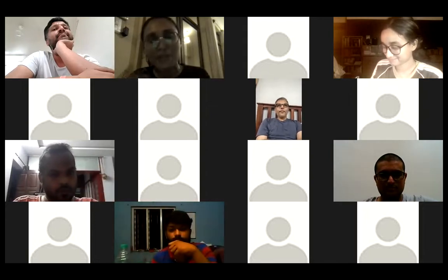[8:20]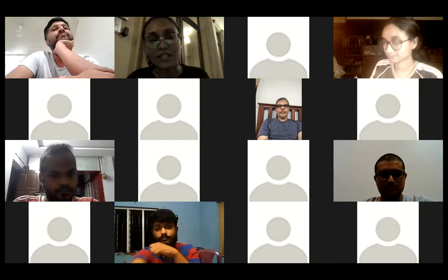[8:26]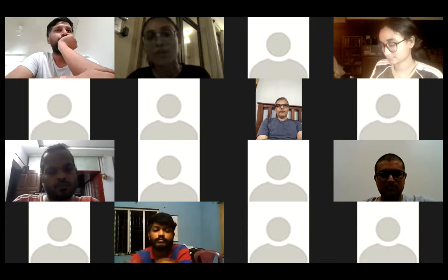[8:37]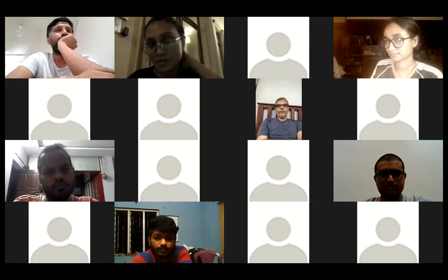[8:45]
Just to add to that, for people who don't know, and because this is getting recorded, I want to put it on the record that Fab Foundation is the OG Fab Lab network and Makerspace network. They started back in 2000 in the US to create a whole network of makerspaces, Fab Labs across the country, and there are over 1,500 labs that they've activated over the last 20 years. They've been part of MIT's Center for Bits and Atoms, and the Fab Foundation is a fantastic, very big organization in the United States. We're really excited that they see the vision of what we're trying to do and support it as well. Which is pretty great.
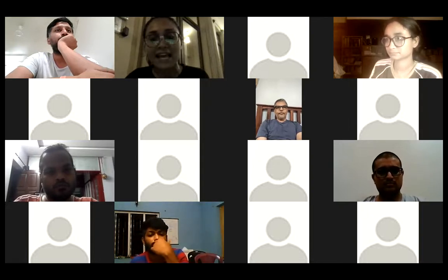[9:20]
Hopefully we'll be able to raise more funds to distribute to all of you through that collaboration as well. And tomorrow, we are also having an engineering call with Professor Neil, who's of course the head of Fab Foundation, and Professor Manu Prakash from Prakash Labs at Stanford, to understand what the engineering would look like and if there's anything we need to take into consideration. I'll pass that on to Anul a little later. But great minds coming together. All of us are trying our real best to make this happen on all fronts. And that's pretty much my updates for tonight from our end.
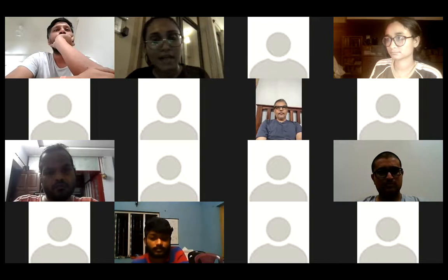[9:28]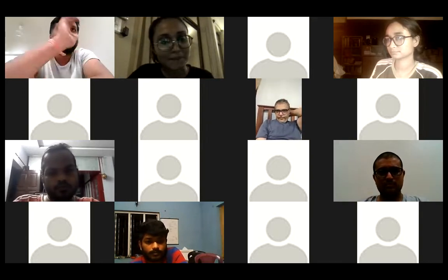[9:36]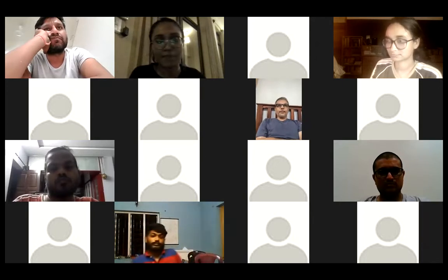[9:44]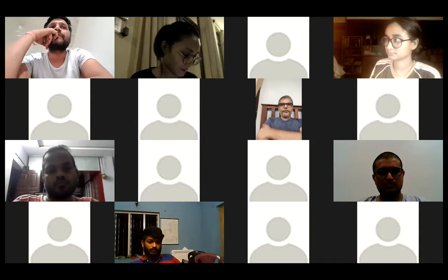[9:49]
I will pass it on to Anul for certain engineering updates, maybe from Goa, and then we'll pass it around to everyone else as well. So thank you. Hey everyone. On the update side, I think we started this build around the 2nd of May. There've been some setbacks due to the lack of components and procurement because of lockdown issues. But at the end of the week, at least today, we have a machine that works.
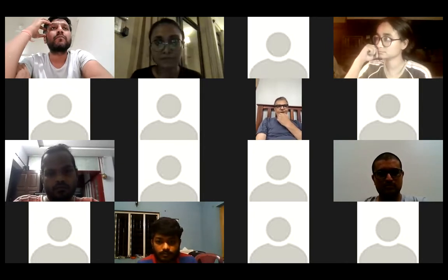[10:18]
We have it loaded with zeolite. We have used 2mm to start with, just to kind of prove that it works. It doesn't matter if it makes 70% or 80%, but we want to make sure that all the leaks are plugged and the code works as required. We may have to tune the code a bit because the mechanics of the system are slightly different in terms of size and capacity and so on. So that's the current situation.
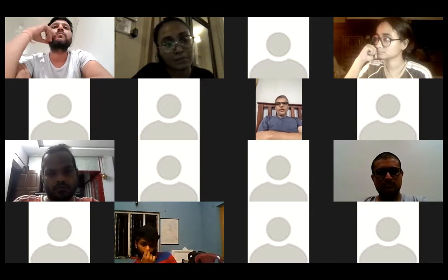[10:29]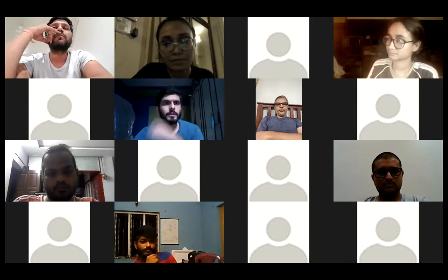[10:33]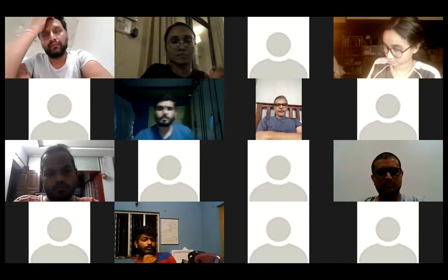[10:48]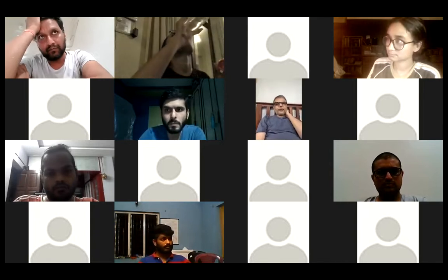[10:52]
Unfortunately, without an oxygen sensor, all of this can't really be measured. So I guess the biggest bottleneck is waiting for that sensor to arrive. That's apparently en route now. I hope we can get it by tomorrow, in which case the day after we can build our oxygen analyzer. We're getting just a sensor to start with. So we will build our own oxygen analyzer.
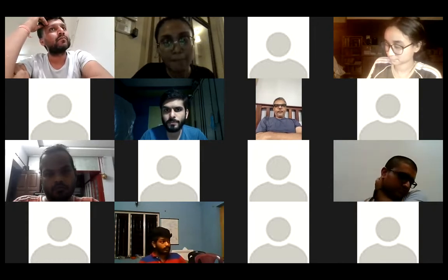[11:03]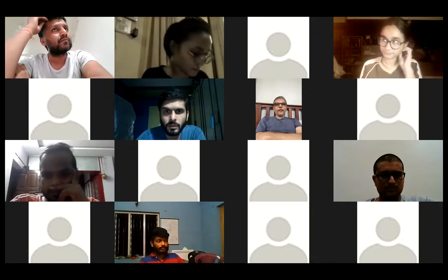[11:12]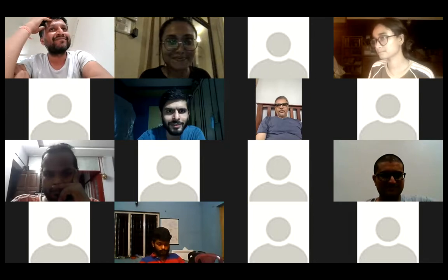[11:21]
We may not have any means of calibrating it right away, but at least we will have some readings of, let's say, an ambient measurement, which should be 20.9. So we know what that is, and then we'll see how much the machine improves that at the output. So pneumatic wise, electronic wise, the machine is ready. We have run it for a while. And now just waiting for this.
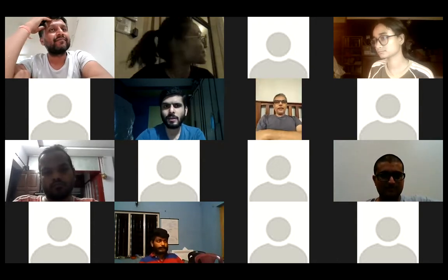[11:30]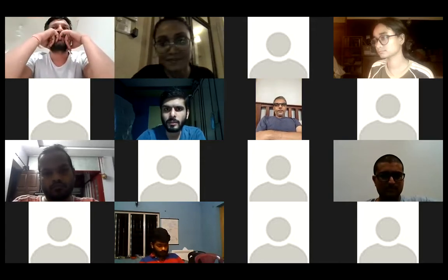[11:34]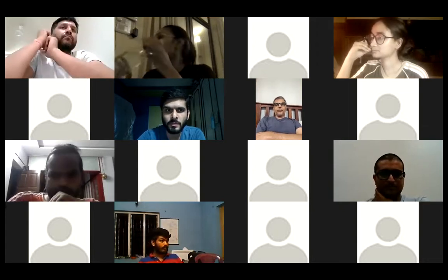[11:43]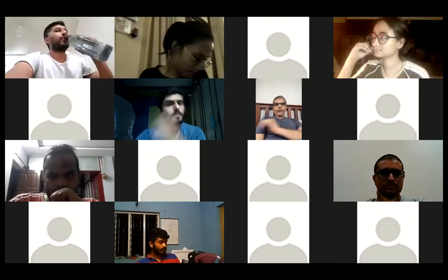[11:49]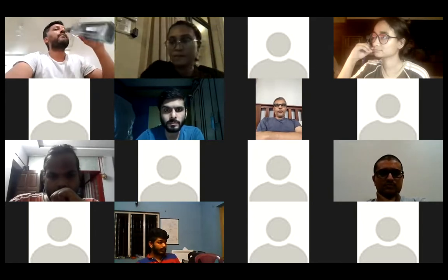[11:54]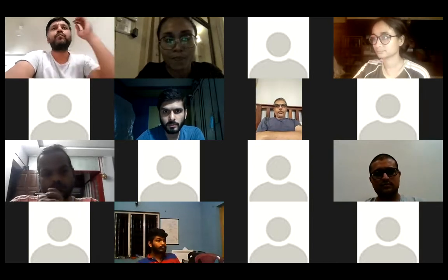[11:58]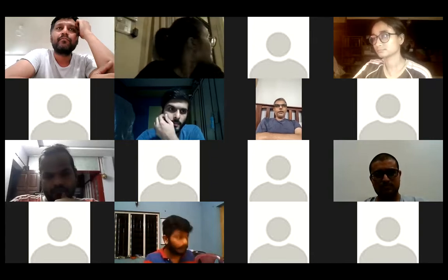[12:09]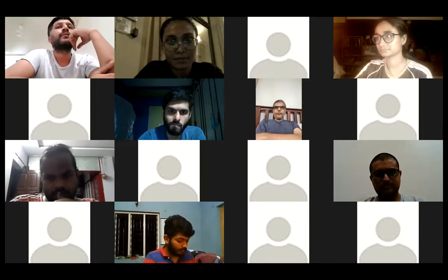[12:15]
There's a couple of other things going on on the electronic side in the background. We're trying to make, let's say, an easy to use black box, which is a controller of sorts for oxygen concentrators. So considering what it needs in terms of sensors for temperature, humidity measurement, oxygen concentration, flow rate of the output, and so on. Maybe a couple of additional outputs to control additional valves, which we may or may not want to activate, at least during prototyping, for example. There could be additional thermal sensors to measure the airflow temperature at the input and especially at the output, because that's what is being sent out of the system. So that's work in progress.
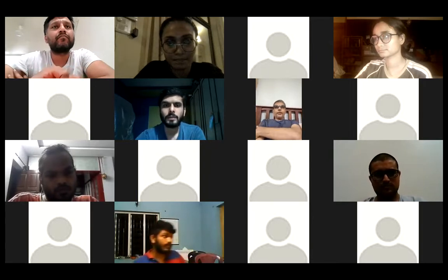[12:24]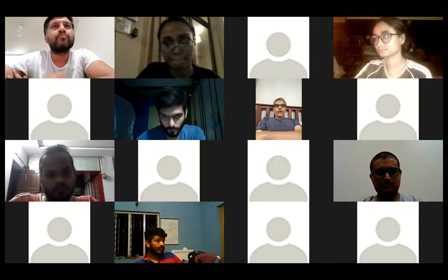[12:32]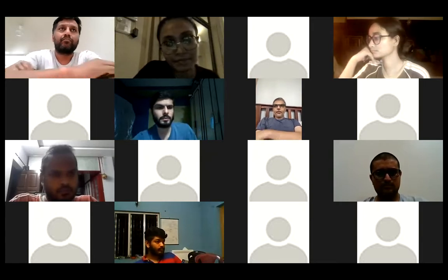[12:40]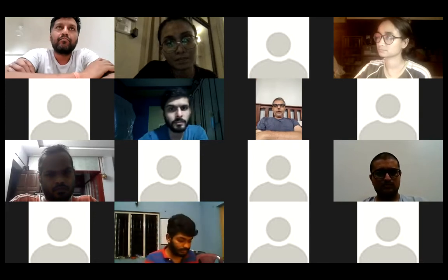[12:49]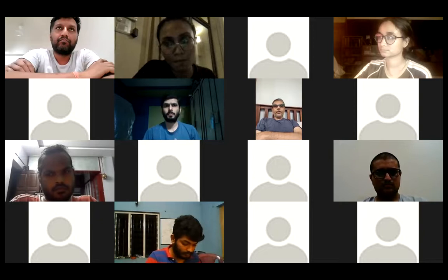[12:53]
I think the other labs have also reached pretty much the same stage. So Bombay, I think, is in a similar situation. Chennai, similar. Delhi, I'm not sure, but I think Abhimanyu and some of the other guys there have also reached pretty much the same stage. We have also ordered a medical grade oxygen analyzer. Again, I think hopefully we should get that the day after tomorrow. So that will hopefully be a calibrated device against which we can check the sensors that we use and make that a gold standard. So probably the day after tomorrow we might see some more action from the performance side as far as we are concerned.
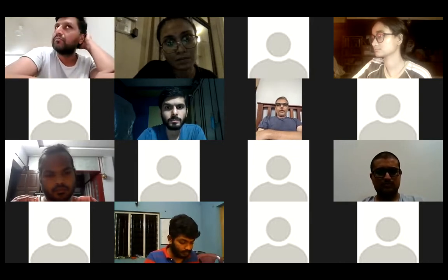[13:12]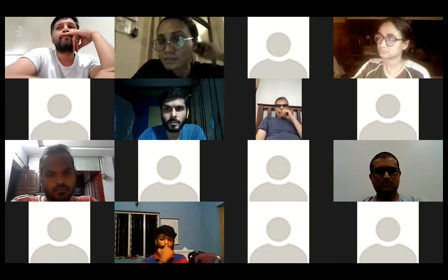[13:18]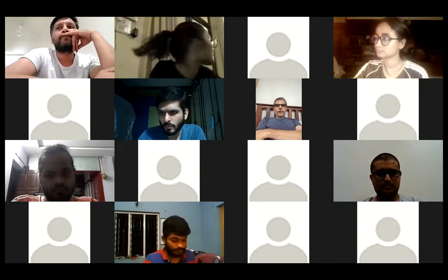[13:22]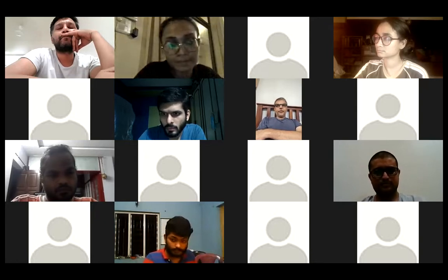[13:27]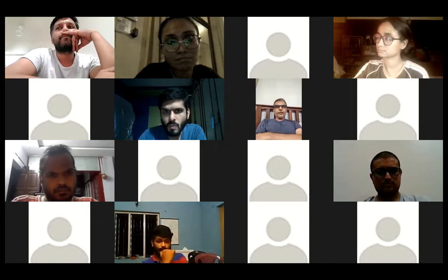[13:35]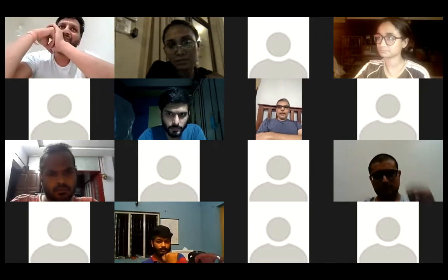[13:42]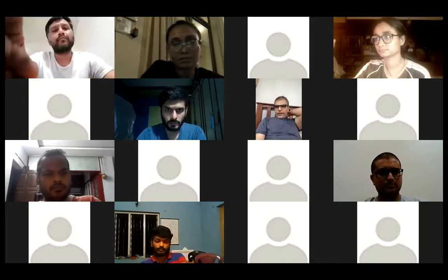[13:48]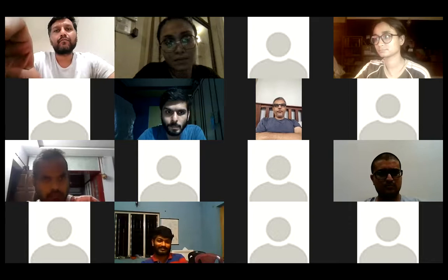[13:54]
I mean, we've had a lot of action today, but most of it was just finishing up the assembly and making sure everything works and so on. Atul says that O2 sensors used for emission standards could be used, but I think those are limited in terms of concentration measurement. Those cannot measure 100% oxygen, so they can't be used. We need very specific sensors, and there are quite a few that we have shortlisted. There are several brands, like Gasport and Envitech and Scilabs and so on. And the folks in the electronics group are working on playing around with what is available, because right now we don't have the advantage of being able to choose the best sensor or the cheapest sensor. We have to use what stockists have right now.
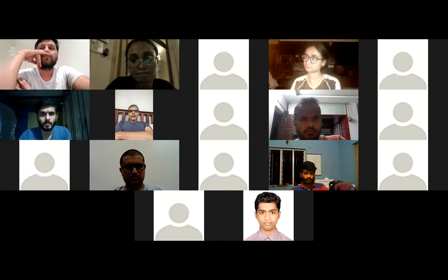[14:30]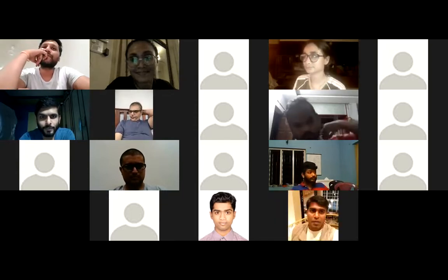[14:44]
So that's where we are. I think the project got a great push today. We've worked on the charter quite a bit, the open disclosure as well. We've tried to tie it in with the open hardware license from CERN for hardware, and MIT licenses for software, I guess. So that is, I think, all in place. We've also been in the news today. If you check out Hackaday, you'll find some additional posts about our project, which is great because it's reaching a bigger audience now.
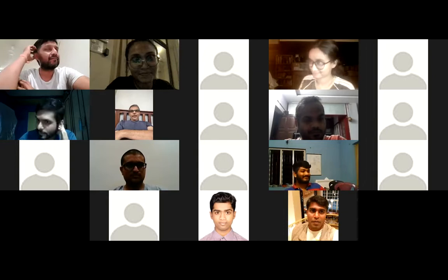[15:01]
And yeah, I think my biggest problem is waiting for things to arrive. Until that happens, I really can't do anything more. So I'm itching to get that done. So let's see, tomorrow or the day after should be the day of reckoning.
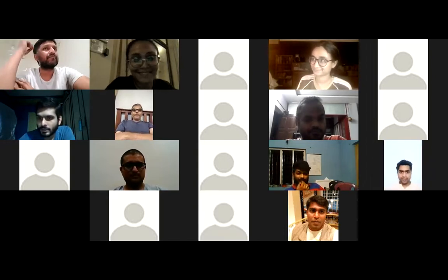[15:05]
Awesome. Thanks, Anul, for that. I will now open it out quickly for everyone's update on this chat. Would anybody like to go next? Okay, Anurag, go for it.
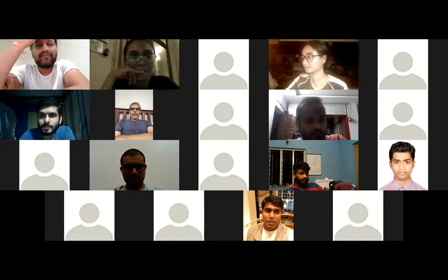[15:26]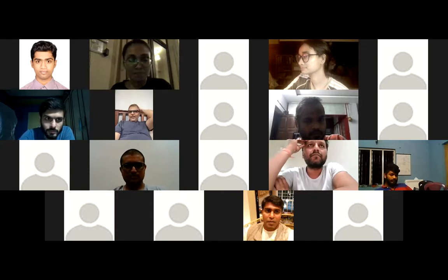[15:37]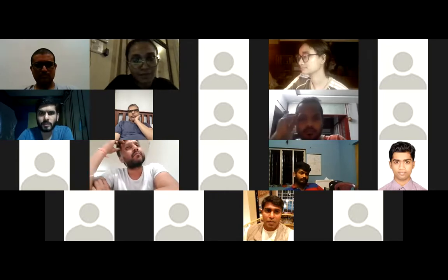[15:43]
Yeah, hi, Anul. Hi, Rija. So, Anul, I had a question. Are you considering putting these sensors at this point of time on some protocol like CAN or something? Not at the moment, because apparently it's going to be quite simple. The temperature humidity sensor is going to be over an I2C bus, so it goes directly to the microcontroller. The oxygen could probably be the same, but no matter which, even if you use a simple Arduino, it has enough GPIOs to probably not worry about CAN bus at the moment, I'd say.
At some future point in time, I'm sure we need a more robust controller, which has a lot more than what we are planning.
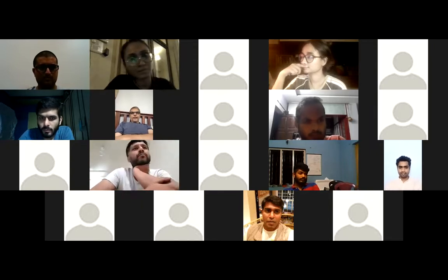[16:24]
So right now the plan is to keep things simple and work more on value engineering, to make it simple and cheap to make. I think that's primary. But otherwise, if you ask us to go ahead, we'll keep designing till kingdom come and keep complicating it unnecessarily. Sure, happy to do that, but I don't want to start that process at all. No, absolutely, I get it. Till we reach a threshold, there is no point in improvising. Exactly, yeah.
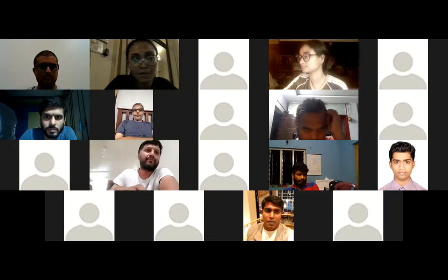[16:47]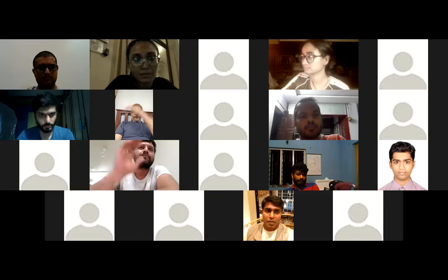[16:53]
Also, in additional news, for some of the folks who are working on the CAD design and others, Autodesk has come forward and is arranging to give us licenses to make things easier. So let's see how that works out. I haven't heard back from them, but they said they will. They're trying to do their very best to help us in any way they can. So let's see how that happens.
We're getting attention from a lot of places writing about us. Fab Lab is on board. Autodesk is reaching out to help us. So we have a lot of support and backing. We just have to carry the momentum forward, I guess. Yep. Awesome. So somebody had a question on the chat.
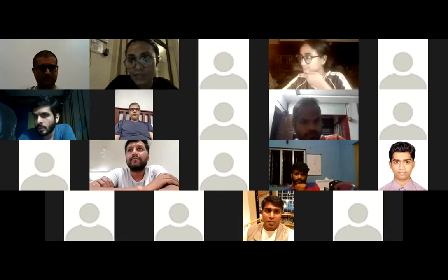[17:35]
Any update on zeolite? So the update on zeolite is that we've received a couple of kinds of zeolite. What we're doing is still testing, because I think today is when we put that in the system. There are a couple of different kinds, right, Anul? And there's one coming in from China as well that we're possibly going to get tomorrow. The only challenge is figuring out which one is the most suitable, which is giving results. Otherwise, zeolite has come in.
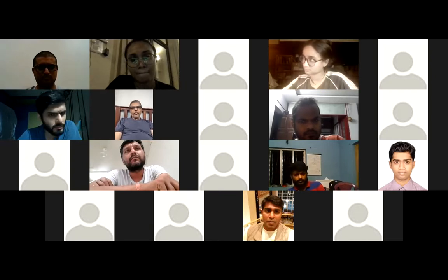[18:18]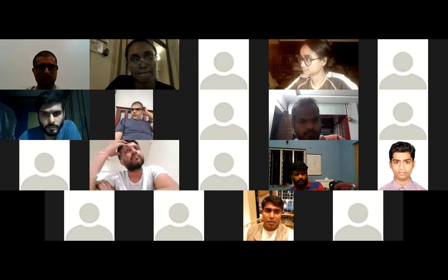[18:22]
Yeah, that's true. We have one batch already at the asylum, another batch coming in from Bombay, third from China. Yeah, en route. Sorry to interrupt, do you have their data sheets also? We have the actual product name and details, so we should probably be able to get it. Frankly, at this point, I really haven't bothered on that particular detail. I know that is very important. I've sourced 3 or 4 different types of zeolites, and it is completely useless if you buy the zeolite without the data sheets, because you won't be able to calibrate and match up the timing.
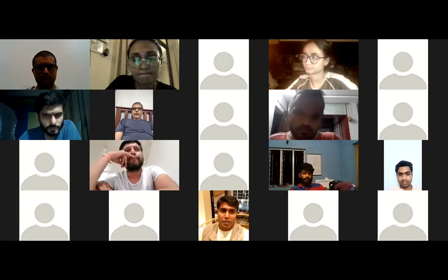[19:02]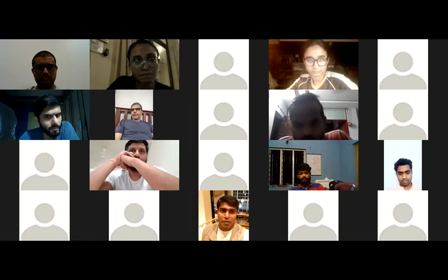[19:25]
Yeah, of course, I understand that we all do, but at this point, it's also a question of what's available. And of course, the one from China, I think, is going to be fully documented. The other one, I think Praveen should be able to help, though I'm not sure if he's on the call. Maybe the documents are available, but I haven't looked at it. Let's put it this way, I've been too busy doing other stuff. Each of those boxes has a particular batch number, so it's pretty well documented in that sense. Finding a data sheet for it shouldn't be difficult. From the data sheet, finding out numbers, like the amount of nitrogen it adsorbs, shouldn't also be too difficult.
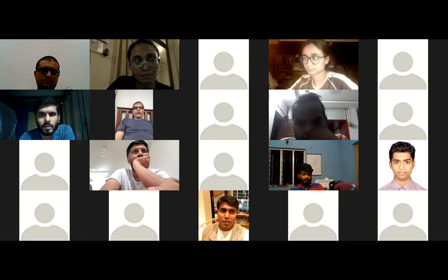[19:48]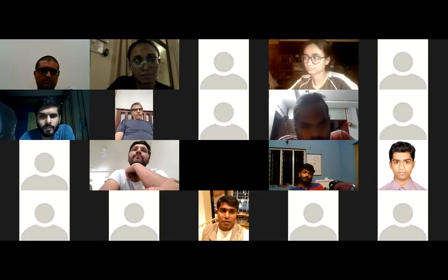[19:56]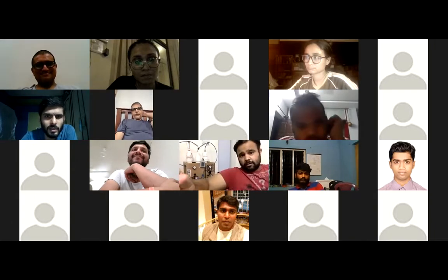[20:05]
But you have to take a step at a time. The point is to get the machine started. Let's see if it does something more than 20%, that means it's working, and then you start fine tuning. Like if I'm building a race car, I try and go straight slow. I can't enter Formula 1 straight away. I need to go through Formula 3, Formula 2, and then you go to Formula 1.
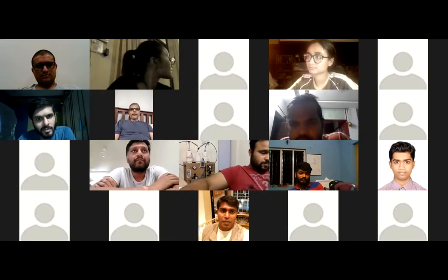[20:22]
So let's take baby steps, because right now this is completely built using locally sourced components. We have no reference or gold standard of what the Oxikit is or what it does, whether it actually does produce the oxygen it promises. These are things that we would know only once we get the Oxikit from the US, which we still haven't received. I think it's been 2 weeks now, Richa? Yeah, it's been over 2 weeks now, and I think it's going to take another 10 days at least or more, is what I understand. So it's a little tricky. We have a large package on the way, but logistics on the ground is a nightmare.
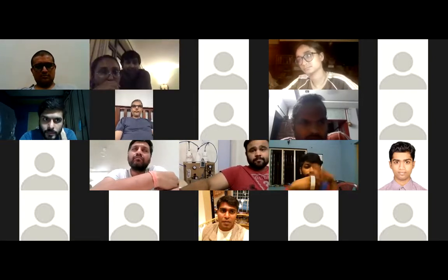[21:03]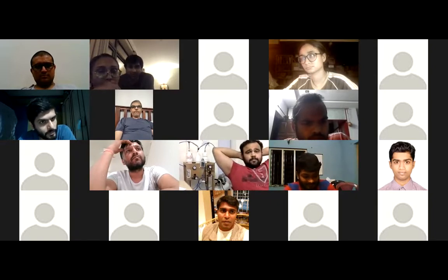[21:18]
So still, it's a problem. So that's what we've been seeing. Yeah, I think that's been the case since the beginning, that importing from the US or anywhere at a time like this, we saw this last year as well. I think everyone was aware of this, especially at the time of COVID. The last thing that you want to do is move too many things. Logistics is always a nightmare, especially during COVID. So localized manufacturing is the strongest, and that's what we saw last year as well, or at least if we are able to create stuff using local parts.
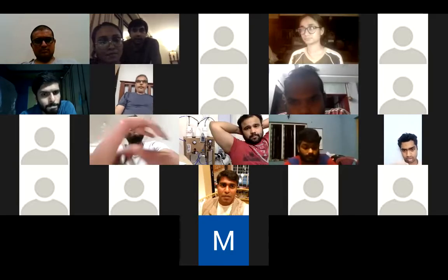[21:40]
So absolutely, which is why I'm really happy to see the really active BOM spreadsheet. It's spread out to a city-wise list, so people are creating things that are available locally, which is really the way to go. Yeah, in the long run, especially at a time like this during COVID and other pandemics, you can't rely on flights coming in from the United States, which are anyways coming in full, being bought over by people who have paid a lot of money to bring in certain specific things.
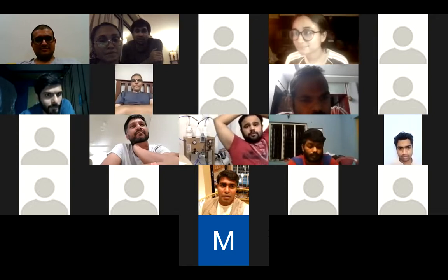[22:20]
And now, that's why our shipment is stuck somewhere in Amsterdam. The 18th of May is when it looks like it will arrive, but I think we should have built it by then, hopefully with Indian parts. So I'm pretty happy about hoping for that part at least. Well, here's the thing, it's already built. We just have to test it out now. Yeah, now we need an oxygen analyzer, which is going to come from the US again. So that's another aspect.
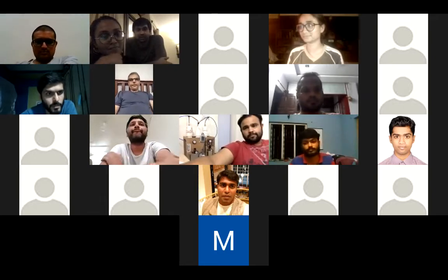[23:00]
I think Weber has worked with a well-wisher who is going to get us a NIST calibrated oxygen analyzer from Fluke. So I think that would really be the absolute gold standard. At least it has a guaranteed sensor life of 2 years. So I think that should be a good way to verify not just our devices, but also the other devices which other labs will be using between now and the future. Yeah, thanks for mentioning that, Anul. Yes, the device will be very essential for the entire maker community to at least have one. At least we should have one NIST certified one. It's very expensive, but it's an investment that hopefully all of us can benefit from. Absolutely.
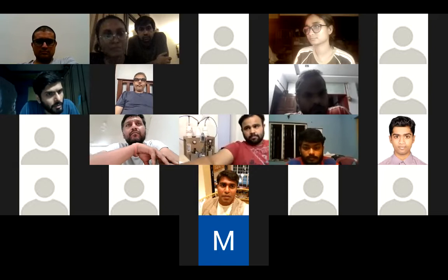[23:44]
So yeah, I just have one quick update. There is a company in Baroda who develops ultrasonic oxygen analyzers, and they have that on hand. The only thing is that it's costing a huge amount, 34 plus GST. But if Maker Asylum has that kind of money at this point, they can invest, and that will be delivered to you within 2 days. They were ready to deliver it to me in 2 days. But the only thing is it's 34K plus GST, and a warranty of 3 years. They will change the sensor if something goes wrong in the sensor.
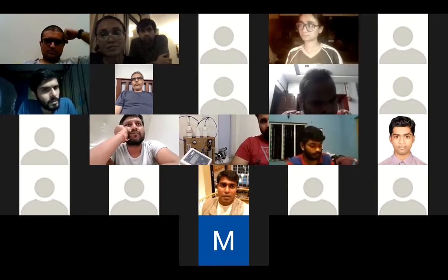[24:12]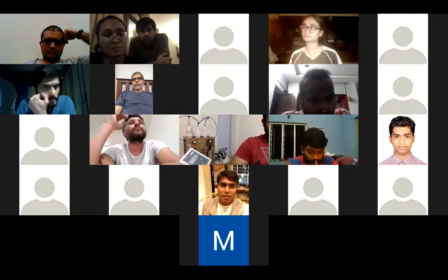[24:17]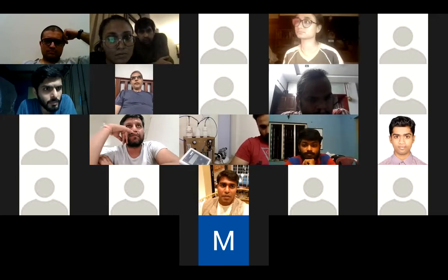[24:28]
Priyank, do you also know if they do flow along with concentration? So is it a dual? It's three things. It's a flow meter, oxygen concentration as well as pressure, and it has an inbuilt GSM device, and it is logged onto the cloud. And they have a login based system, and you can monitor all your data. For example, if you run your Oxikit for 24 hours, what was the data throughout the 24 hours? That is logged into their cloud. Interesting. Just share the link with me.
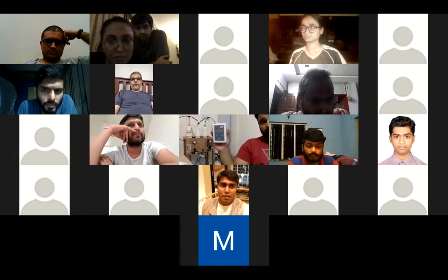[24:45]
We'll check it out. In the meantime, we have also ordered a third oxygen analyzer that's coming in from Delhi. That's costing around the same, right? 28K or something of that. This cost me 24K due to the black market stuff. This is actually somewhere around 8K. Is that an oxygen analyzer? Yeah, this is oxygen. So these people are making money out of things, killing, I mean, outright. Like I burnt all my cash to get this.
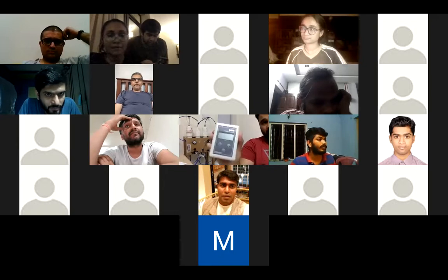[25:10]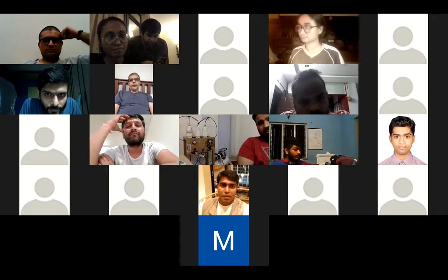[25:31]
24K. So this oxygen analyzer uses that same sensor, that OM 101, right? Yeah, that's right. So the sensor that this device uses, we are getting it for around 2.7K. We reckon we can make a nice analyzer for less than 8K, maybe 10K, even less, for sure. So about a third of the price for sure. Maybe even less actually, because there's not much once you have the sensor really. So Anul, should I hold the one from Delhi then till we figure out this one? No, we still need that in the interim. Then we can have someone else use it actually.
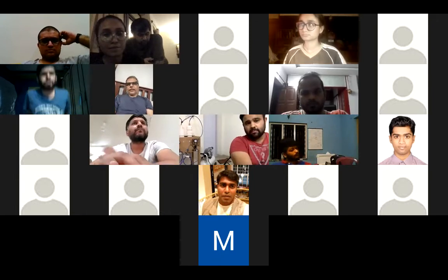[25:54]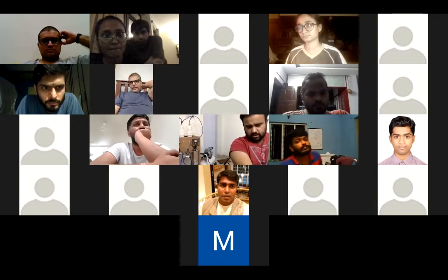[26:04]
Yeah, fair. That's fair. So even if we get just the sensor, we still need a way to cross-check it against something else. What about these Honeywell oxygen sensors? That's the Envitech, a Honeywell division. It is somewhere around 3K, and you fit electronics and make it work. Yeah, so that's the one we are talking about.
There was this guy, Krishna from Chennai. He gave me a reference. So this guy has somewhere around 100 of them, and he's selling at 3,000 rupees only. 2,700 plus tax. 3,000 rupees. He had 100 of them.
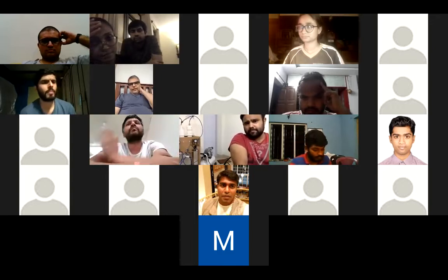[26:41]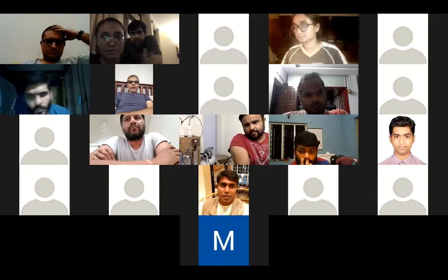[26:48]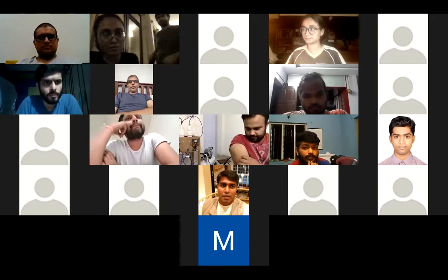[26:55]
Yeah, we are aware of that source. Like I said, that's the sensor that is en route to us, but it hasn't yet landed on our desk. Once it does, assembling, we already have the rest of the electronics ready. We just have to plug it in once we get it. And once we get the second analyzer from Delhi, we'll compare the two so we can calibrate our device. And then we have two oxygen analyzers that we can use. And then eventually a third one will arrive from the US.
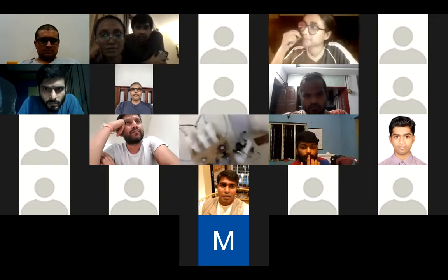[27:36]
So quick thing on this, Abhimanyu, now that your screen is on, we can see your device. So you want to give us your update as to where it is at the moment? Are you getting some good results yet? Yeah, like I mentioned, we're getting somewhere around 75 to 85% at 7 LPM. What compressor are you using? I see a tank compressor over there. Yeah, this is a tank compressor. Is it a 2 HP or a 1 HP? This is just 1 HP.
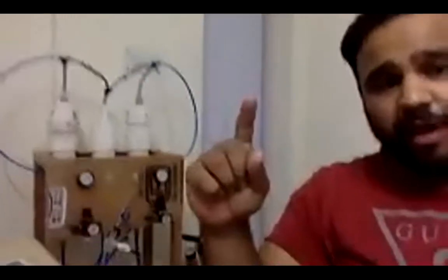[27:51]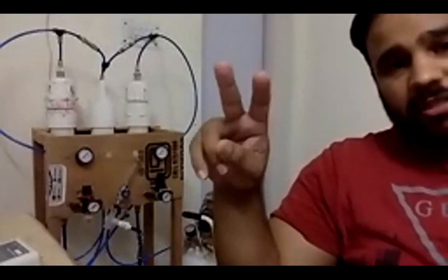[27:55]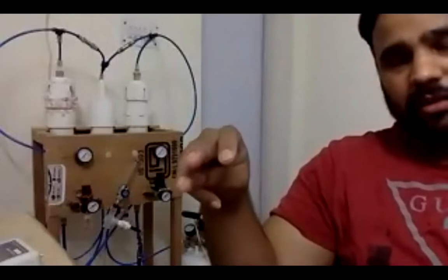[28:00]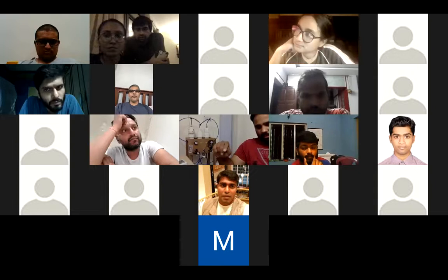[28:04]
Yeah, 1 HP. And the thing is that I've been working with multiple prototypes, and I've tried zeolite that are nano size. I've tried them of 1.6 mm. I've tried them of 0.4 mm. All these are sodium based, sorry. I haven't tried the lithium based. And I wanted to know, is there a certain protocol that we can follow to get the readings right, so that we can share our readings with you also, so that we have a standard.
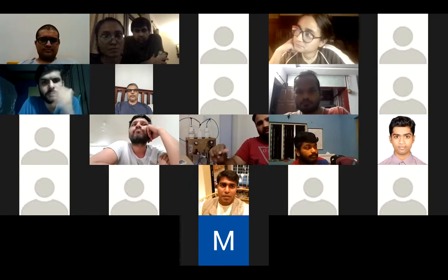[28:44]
So what we need to do is set standards, as in what should be the size, what should be the volume of these vessels, and what should be the operating pressure, and all those things. We need to document them properly so that my knowledge can be shared by you people and other people who are at the advanced stages, so that we can share our knowledge and get the insights. So we should start working on that. Yes, agreed. Anul, I think we can, yes, for sure. Thank you, Abhimanyu, for that.
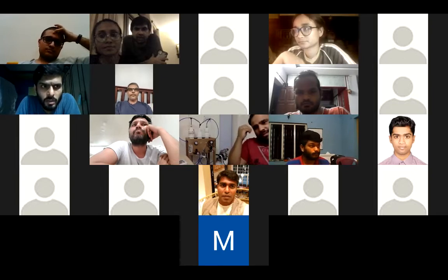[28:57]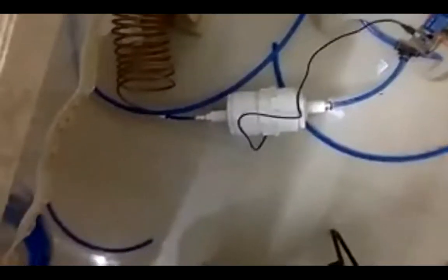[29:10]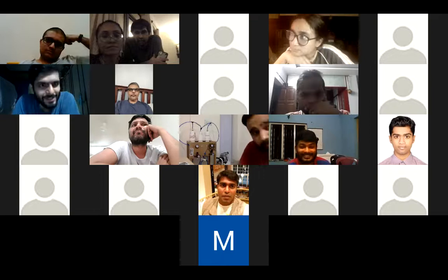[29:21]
One more thing, Abhimanyu, before that, what's the humidity level that you're facing in Delhi? I don't know why you guys are so much with the humidity and stuff. I just made this thing, if I can show you. And I've used silicon powder, and I'm not facing much issue with that. Man, in Goa, the humidity is 70 to 80%. So here we've put 2 dehumidifiers, and still we're not going down to under 30% humidity. I guess this tank also has a lot of water inside of it.
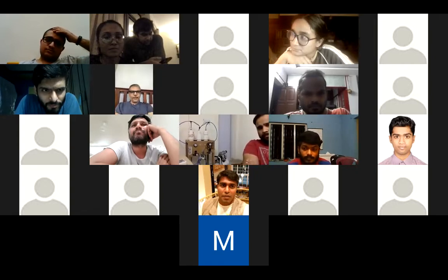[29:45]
So we heard something else about the tank. Anul, you want to mention that? Yeah, essentially, once you have a tank compressor and the air remains still, Gorbachev has better insight on that. But essentially, once the pump isn't working anymore and the tank is full, you obviously have water condensing at the bottom. But once the compressor, the pump starts up and starts stirring up the whole tank, the water vapor becomes slightly more difficult to capture through the moisture separators and so on.
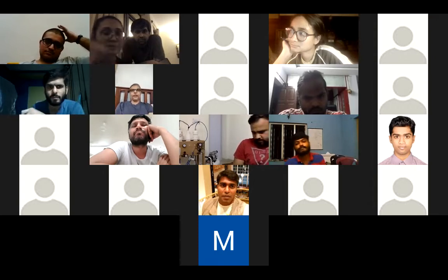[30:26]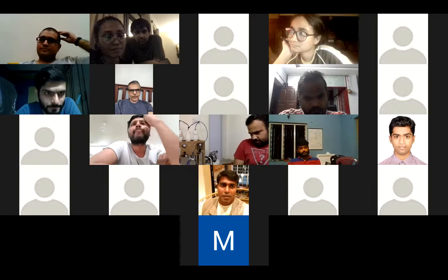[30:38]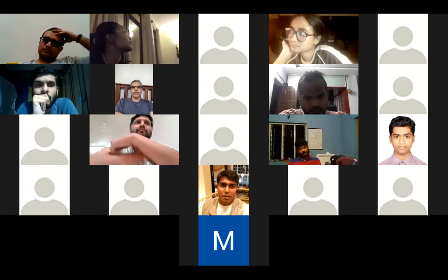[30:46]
So there's a pro and con to using the tank compressor. The advantage is that your motor doesn't have to run continuously because it will switch off once it reaches a certain tank capacity, and that gives it some time to cool down. So I like that, especially in our country because of the high temperatures that we have. But once you use just a compressor without a tank, it has to run all the time. I mean, 24/7, as long as your machine needs to be on, you can't switch off the motor. So managing heat and that stuff is a little bit more tricky.
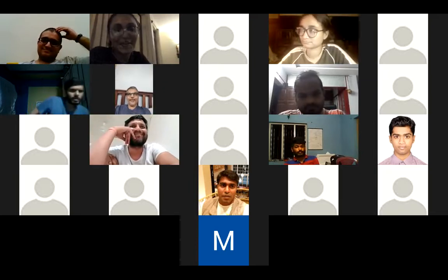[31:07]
Anul, quick thing. Can we keep the engineering discussion for tomorrow, please? Everyone, the call is tomorrow, so that'll be really great. I'll mute my mic. Okay, thanks. I know it's an occupational hazard, so I'm just going to let that be.
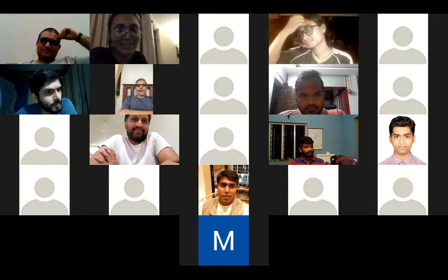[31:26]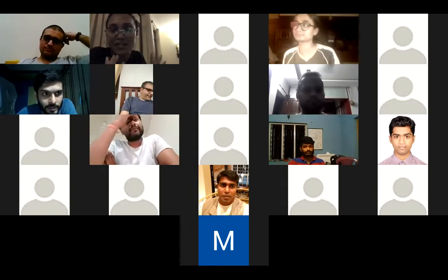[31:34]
I'm just going to quickly ask. Thanks, Abhimanyu. That's fantastic, by the way. Congratulations, and we've been hearing all your updates as well. So that's pretty nice that somebody has it up and running at the moment. Apart from that, I wanted to quickly just ask on the floor if there's any specific update, not engineering questions.
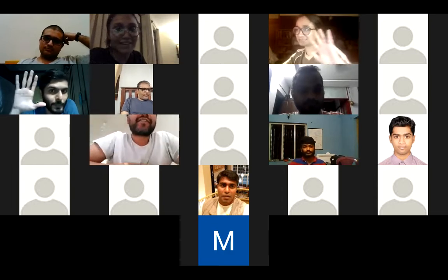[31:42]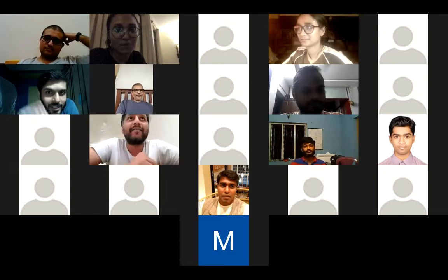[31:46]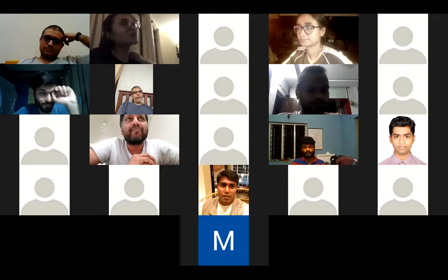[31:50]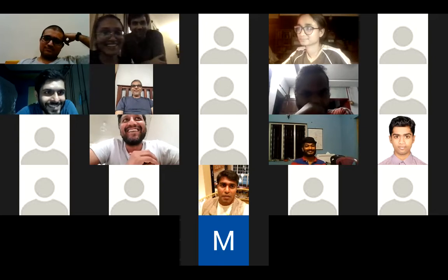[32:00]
How is the situation in Goa and how many people can travel? Like, how many hands do you need in makers right now? Vaibhav, do you want to answer that question quickly? So what kind of hands? I mean, if Anurag is coming to Goa, I think that's what he's asking. Anurag, if you're coming to Goa, yeah.
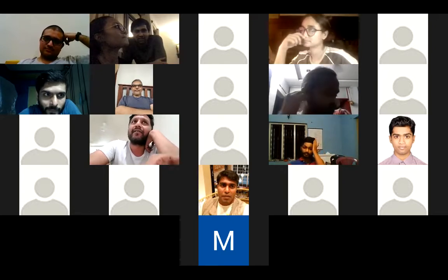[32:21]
The situation is pretty straightforward. You can come anywhere you want. I'm just asking what kind of hands. I'll get a couple of hands now. I'm not enough. So if the situation is under control, can I bring two, three people along with me? If that's okay. If not, then we can think.
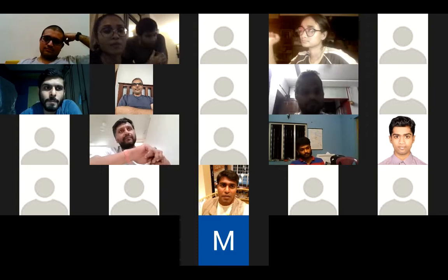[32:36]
So Goa in general is at a bad state at the moment. I would recommend that we have this conversation in a day or two because the lockdown will start. From an engineering perspective, we're pretty much sorted. But if we need something, maybe in a day or two we can revisit this. Goa as such is pretty bad, this is what I heard over the weekend. Goa is actually a pretty bad space.
Yeah, it is. It's at a 50% positivity rate at the moment. It's pretty bad. We are in one corner of Goa, between the asylum and home, so we don't step out of that village. So hopefully we'll be okay. But fingers crossed, because it is pretty bad at the moment. Okay, anyway, cool. Thanks.
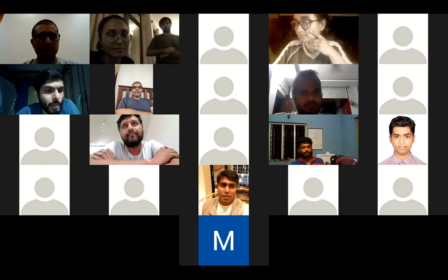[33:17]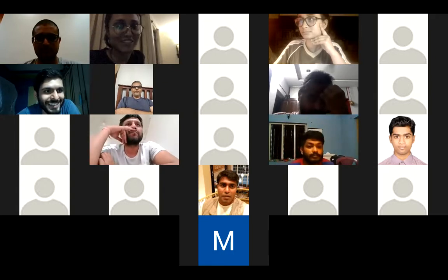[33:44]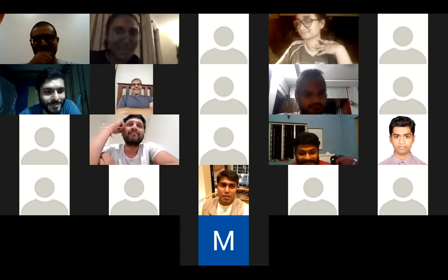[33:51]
Dipesh, you wanted to say something? Am I audible? Yes. I don't have an engineering question, just an update, and I wanted to remind you about the last question. It turns out there are a couple of people whose employers are willing to make donations to the project, and they are still unsure how we can accept these proceeds. Fair enough. I'm just waiting for our engineering team to give me a go-ahead with the funding piece. If they're able to make it run by tomorrow, I'm happy to resolve all kinds of funding issues. I've noted your point.
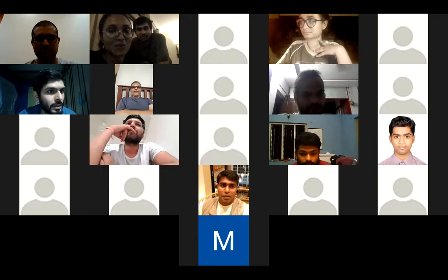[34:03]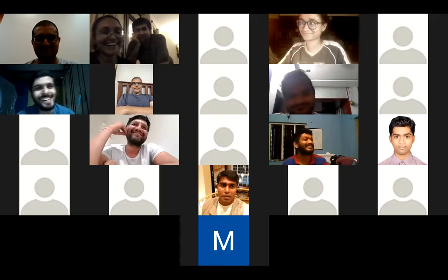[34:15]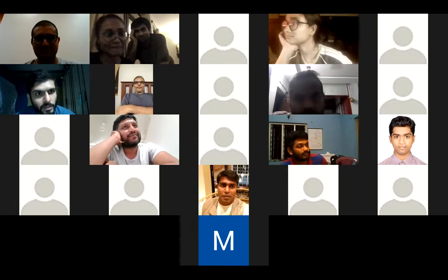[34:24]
I'm working on it. And we also have to reconnect on the influencer piece, which I've been toning down until Anul and Vaibhav make the device function. Well, let me just say that again. The device is functioning. We're waiting for an oxygen analyzer to be able to test out our findings. I think all of us are getting there, but we need 100% assurance before we start making much more noise. That's why we're holding on.
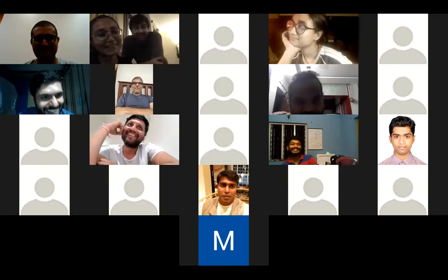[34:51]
In fact, because we were waiting and didn't know what to do, we carried out a pressure test yesterday. The results we will not be showing around. That's only for the collective to see later. It's only for entertainment. Should we start asking for volunteers, as in COVID patients, to test out the machine? Maybe. Yeah, we had a little secret blast chamber of our own.
Hey Vaibhav, this is going on YouTube. Yeah, but I mean, it was a pressure test. We conducted a successful pressure test where we were able to test how much pressure those PVC tubes can handle before they blast. And then we experienced a big blast. Was it a controlled pressure test? Yes, very, very controlled.
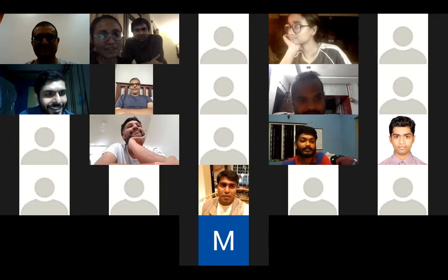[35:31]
We have it documented in slow motion video. What was the pressure? I think it was over 5 bars. Yeah, we managed to reach 5 bars before it blew up. Which is actually pretty straightforward.
It was about 5 bars for the UPVC, because we used the thinner schedule 20 fittings. Schedule 40 would possibly have gone above it for sure. What I'm using out here are schedule 80 fittings, everything. Yep, that's the best.
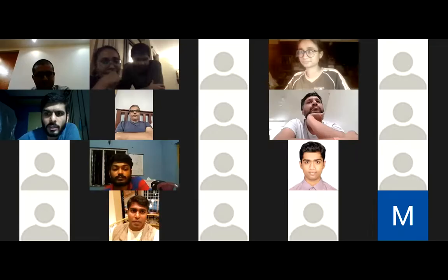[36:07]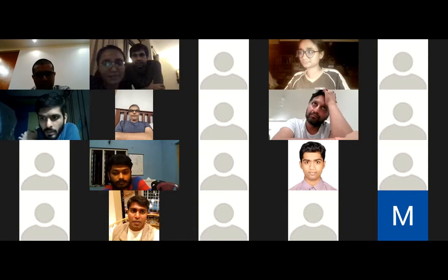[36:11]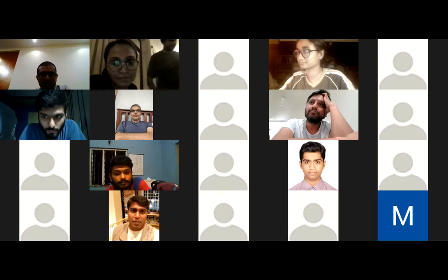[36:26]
We were using 20 and that was meant to crack. And we also wanted to just make sure about the glue as well and a few other things. So yesterday I also went till 80. I have all the genetics, pneumatics. I also went till 80 psi, and we were good enough. We had a ring type whistle, and that was set at 80 psi.
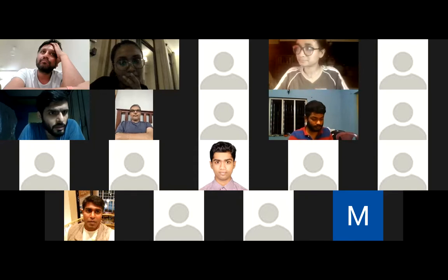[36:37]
And I also shared a link on the chat. I was able to drain a lot of moisture from that. A lot of moisture. And this is a device which was suggested by Krishna from, I guess, the first one to make the Oxikit. I had a talk with him and he said about this Ident company moisture removal.
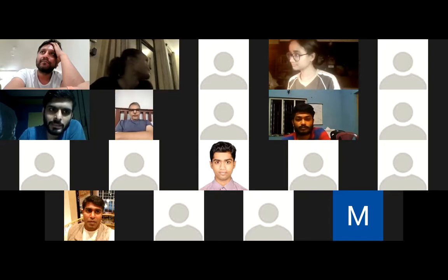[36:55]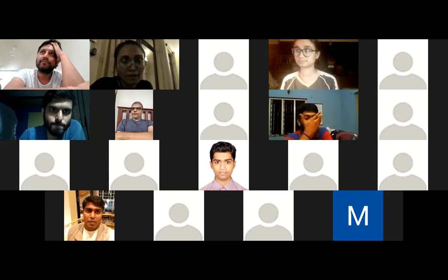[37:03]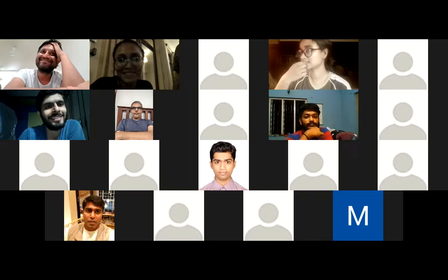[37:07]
Yeah, I mean, we are using something pretty similar, and we have also been experiencing a lot of moisture in our system, which we have been having to vent. So I think that's a problem that needs to be tackled for sure. Why don't you pay a visit to Delhi? The moisture issue will be gone. But if it functions in Goa, then we mean it's foolproof because the moisture is massive.
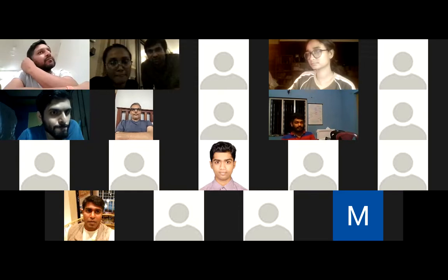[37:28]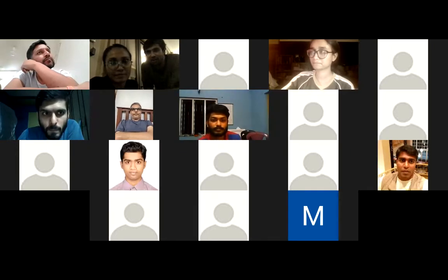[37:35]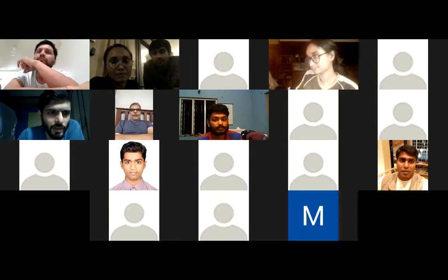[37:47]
Actually, that's one of the things that we also learned, that the Chinese ones that are coming in, because the humidity level in China is very, very low, when they come to India, they don't actually have all the dehumidification parts to it, which means that most of them are malfunctioning in certain parts, and all the zeolites are becoming clunky very, very soon. That's going to reduce the oxygen output very, very soon. So they won't last very long, these devices. Yeah, most of them are dead on arrival, actually. Yeah, that's exactly what we're hearing on the ground as well.
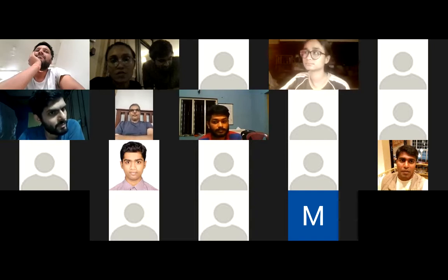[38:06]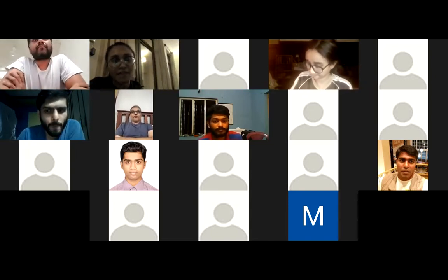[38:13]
So actually, that reminds me of a quick thing, just for everyone's update, and we'll be sharing this soon as well. There was a flow meter issue on the ground with oxygen cylinders. One of the collective members in Bangalore with Vijay, Faisal, has come up with the open source design of how you could 3D print or CNC that flow meter. So we'll be sharing that, and if anybody has access to it, can do that locally and give it to the hospitals, because it's apparently becoming a big issue, the regulator and the flow meter.
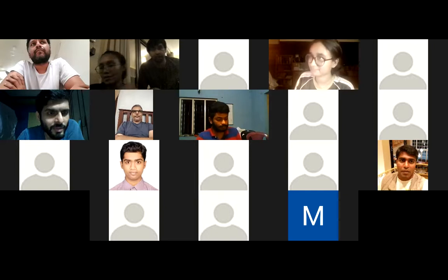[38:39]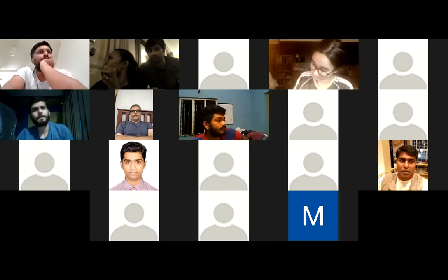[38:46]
On that note, there's another project called the Oxymizer, started by Manu Prakash, I guess. And we are actually speaking to him as well tomorrow, I believe. We should actually bring all the engineering team together to talk to Manu at this point. So tomorrow, I guess we can talk to Manu Prakash. And the Oxymizer is another exciting project that if anyone wants to start doing that as a parallel thing, that's also a possibility. That's a great one. And there are quite a few people interested in that too.
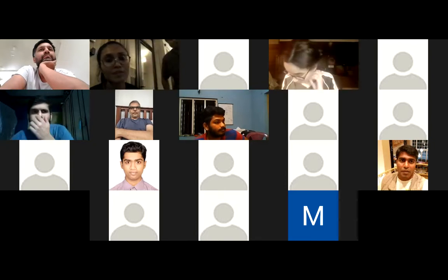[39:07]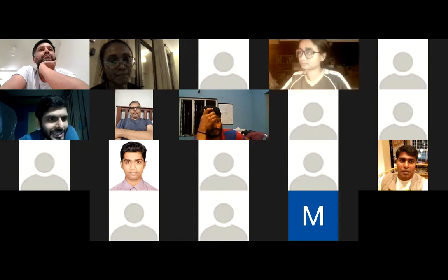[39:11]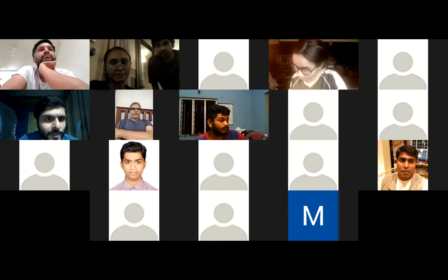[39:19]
Yeah, okay, let the page speak. Sorry, you're saying something? Is that the Inetra guy? No, he's a Stanford guy. Yeah, Prakash Labs at Stanford. Okay. Just search for Manu Prakash, a lot of stuff will pop up. Yeah, I've heard the name.
Yeah, so what the Oxymizer does is it reduces oxygen consumption by a COVID patient by about 50%, because it releases oxygen only while inhaling, and when the patient is exhaling, it switches off the flow. So it's got a control system to sense and put it on and off and stuff like that. It's pretty simple, but quite high tech too.
Can I say this one? Link anything? Perfect. So awesome. So anyone else? No engineering questions? Any regular update, please, from anywhere else?
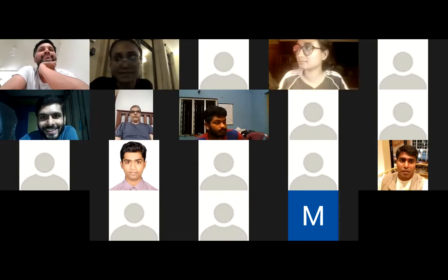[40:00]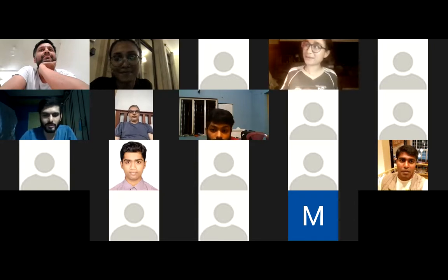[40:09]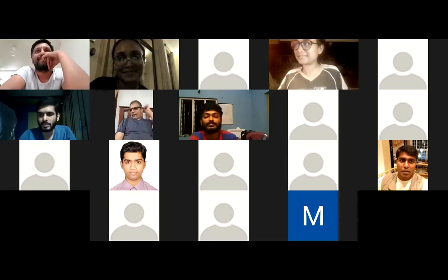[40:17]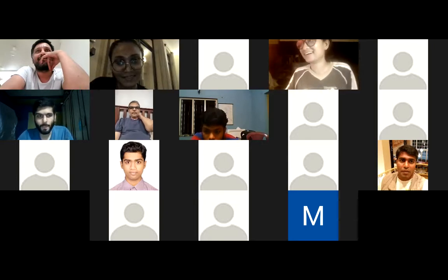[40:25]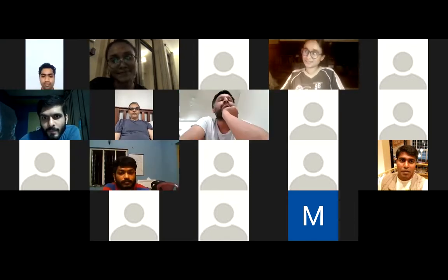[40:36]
Yeah, I have a really small one only. I don't know where we stand compared to other labs, but now we have a space and we have people hacking it, and we've also got some leads on local sourcing. Oh wow. Yeah, and I'm not the technical person. I came across this very randomly. And tomorrow I think the engineering call will really help. I think there's some problems with the sieve, how to go about that.
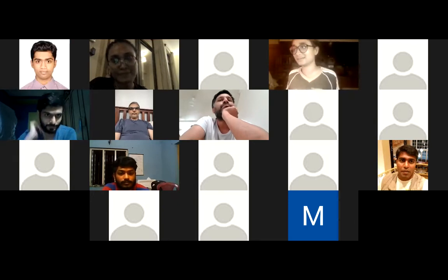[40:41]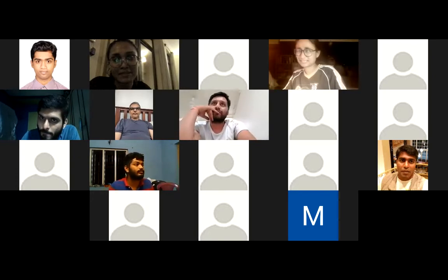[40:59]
I think tomorrow's engineering call will help, and our fundraiser, the last time I updated, it has risen by 3 times since then. Wow. And I think it has to go 3 times more, so still a long way. Amazing. And I just wanted to know, there's a sheet that updates template that you guys had put out. Can we start using that? Because I think last time you said there's still some things you wanted to streamline. In terms of the BOM? Yeah, the BOM and the update sheet, and one more thing was there.
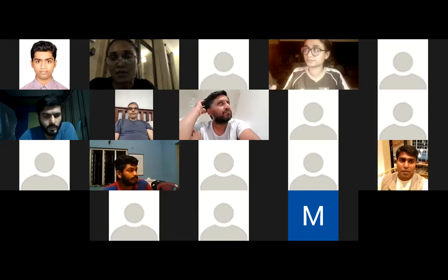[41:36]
Yeah, I think Bhanu is doing that piece. So in case you want some clarity on that, just ping Bhanu and he can let you know. But overall, like I mentioned in the beginning of the call, we are also putting it on Notion so that everything is right on screen. You don't have to go into Excel sheets to do much. So hopefully by tomorrow we'll be able to push that out and more information will be coming.
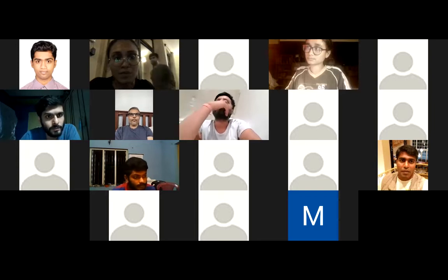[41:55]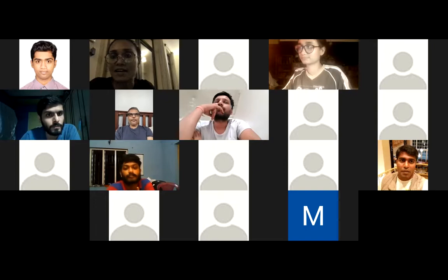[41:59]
We are also hoping to host another lab coordinators meet in the next 1 or 2 days. So hopefully we'll be able to put everyone together once again on the same page once we have a few things on board. So awesome. That's great news. Congratulations, guys, and keep us posted. Okay, awesome. Last,
Prem from Andhra. Yeah, good evening, everyone. My name is Sai Prem, and I would like to give a quick update with respect to our region where the funds are ready for us, and we have locally sourced all the material. We are just waiting for zeolite so that we can start making it. There are people who are really interested to fund us and also ready to purchase it. So the orders are ready, but we are just waiting for the zeolite to arrive so that we can make it with different types.
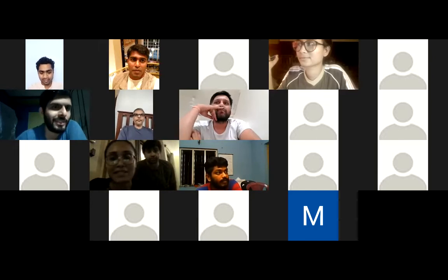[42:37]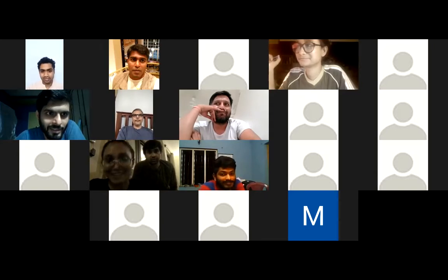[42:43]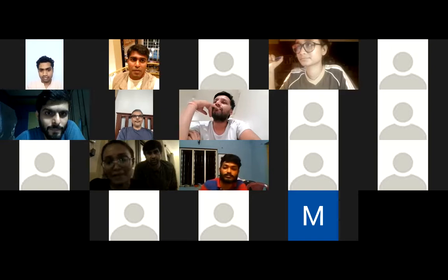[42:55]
Just as a personal recommendation, do make the first prototype, make it work, and then take money, please. If the funding is for the prototyping and they know about it, that's great. But before you give it out as a product, I think it's important that you test it out. Just my piece of advice, but that's how we are also approaching it.
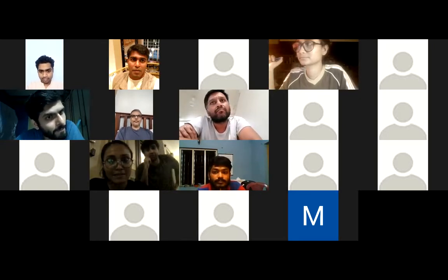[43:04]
And another thing, before you put the zeolite in, it's important to test the system. So run the system for at least a day or so without zeolite, so you can check all the leaks. There's one hack in there. Before using zeolite, you can use Atta. Test the moisture. We just ran it empty. We just ran the tube empty for a day. Oh, for the moisture and all. Yeah, that makes sense. That's a good hack, I think.
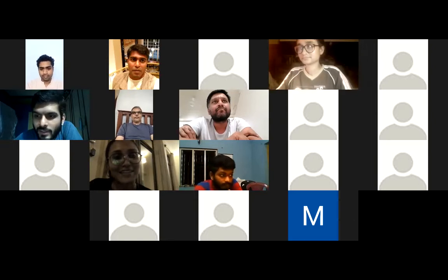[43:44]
Okay, awesome. So that's great. Thank you. You guys are in which part of Andhra? Rajahmundry, East Godavari district. Yeah. Oh, nice. Amazing. Awesome. Fantastic. So that's great progress, guys. Next, I think I have Gorba. Gorba, you want to go ahead?
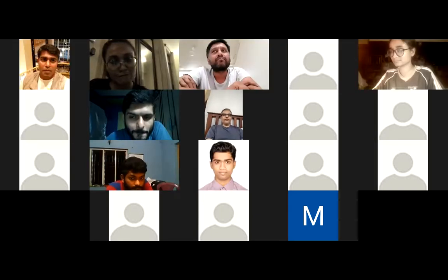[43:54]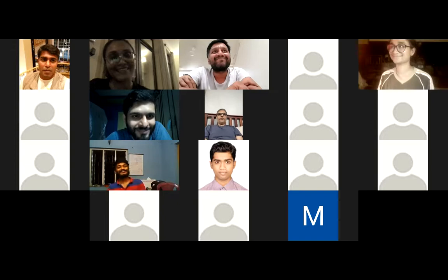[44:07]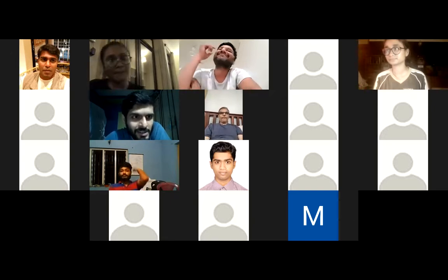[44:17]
Sure. So I have 2 updates. One is we managed to move my home workshop to a place sponsored by one of the colleges. So hopefully now I can run the compressors late night and my neighbors don't yell at me. So that's one. Second one is, we are talking about sodium and lithium. There's also a calcium-based variant of zeolite. So somebody, if interested, have a look at it as well. So that's 2 things from me.
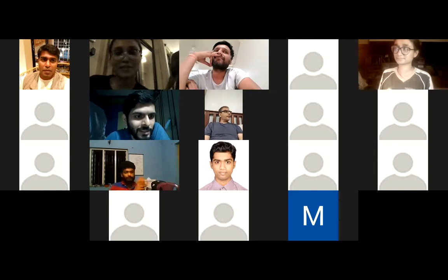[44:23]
Yeah. Thanks. Awesome. Congratulations. We heard about your space. So that's really great news. Bombay requires one great lab. So we're very excited. Congratulations. Awesome. Anyone else? Any updates from your regions or anything that you want to share apart from engineering questions?
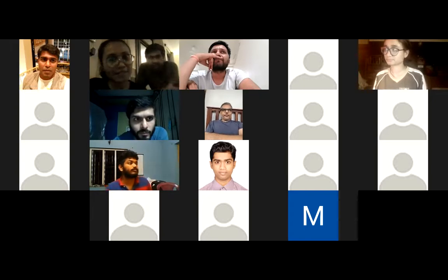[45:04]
Richa, I would like to share one of my friends from Chennai. He's a chemical engineer. When I shared all my requirements, he said to utilize zeolite 5A. Apparently it's a better zeolite, in my opinion, right? Am I right or wrong on that? No, that's right. Equivalent to 13X and better in some places. Depends again. It's a function of compressor and zeolite at the end of the day.
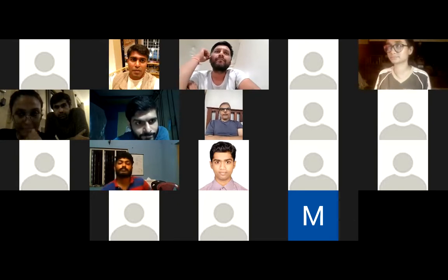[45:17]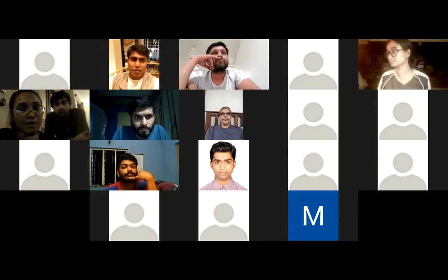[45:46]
The important thing is what's available. I mean, 5A might be better. Lithium X is even better, but can we get it at this point? I guess no. So if we have 13X, we work with 13X. We should not even think about lithium, because India doesn't have lithium. We have to import most of the lithium raw material to manufacture anything. So just be conscious about that. If we can make it work with sodium, it will be great for the long run. Makes sense. Yeah, of course. And it's cheaper.
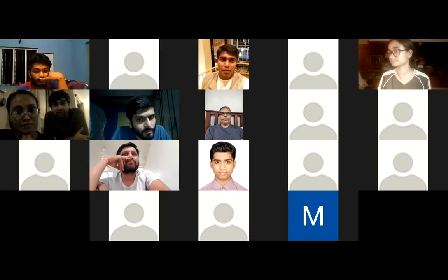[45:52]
Okay, I have two. One quick thing for the guys who are doing this, especially Prem, Negi, everyone. Just make sure your pipes, especially for the sieves, double check, triple check your connections. Make sure your gluing is perfect. You're playing with a lot of pressure over there. 2 to 3 bars, sometimes 4 bar pressure.
That's quite a bit of pressure. If things start opening and cracking, we did a pressure test yesterday and we saw a big blast once again. I mean, in our case, we did it in a controlled way. But if your fittings are not done exactly the way it's done, and you haven't tested it a couple of times, it can be dangerous.
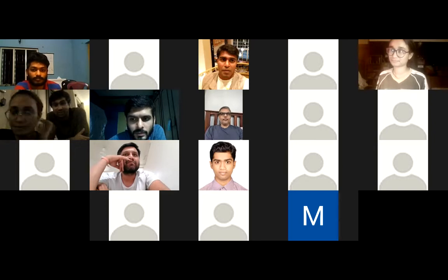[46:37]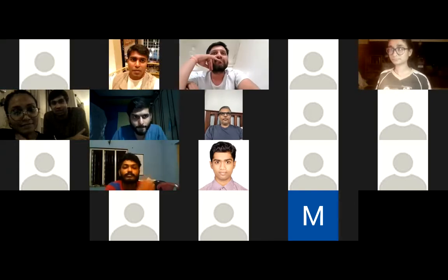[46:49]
Yeah. So everyone that's doing it for the first time, just be a little extra cautious and follow all the instructions to the T. Everything is there for a reason. Every step is for a specific reason. Try and follow that. And if there's any question, if there's any doubt, just reach out. And tomorrow again, we'll have the engineering call.
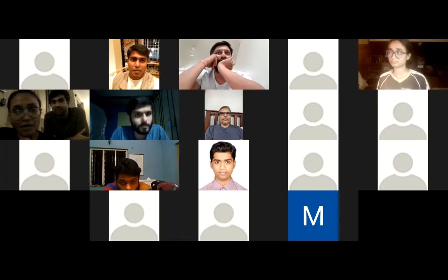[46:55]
We'll all be there to help out and offer advice. Yeah. Stay safe. One last thing, this last message that you just told, that needs to be broadcasted because we're using high compressors and everyone is forcing in that direction. So this needs to be broadcasted. Yeah, we'll do that on the groups, I guess. Vaibhav, you can send a voice note to everyone saying that it's important. Yeah, it's super important.
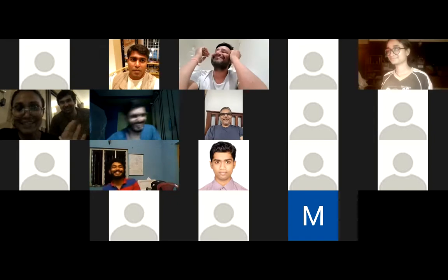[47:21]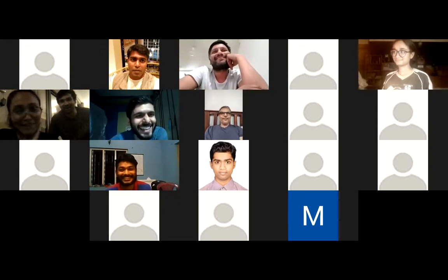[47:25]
Okay, quick. Put up a video proof. Put up a video proof. We can't share the video proof till we have the product out in the market, guys. No, not happening. It's scary. Can't release a crash test before having a safe product out there. Yeah, we're setting it up. Crash test needs to come second, but yes, we'll put that together. There's a BTS video in order, so don't worry. All the bloopers are going to be captured and sent to everyone else.
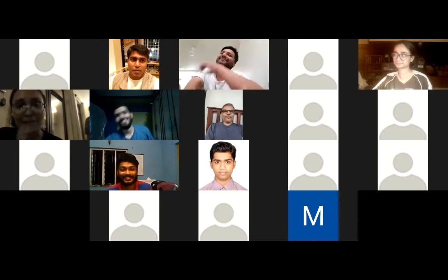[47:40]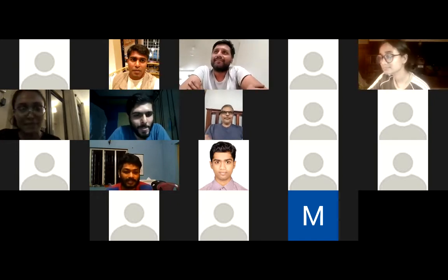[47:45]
I'm just going to quickly go to Atul because he's not spoken. So Atul, you wanted to say something? I can't hear you. Am I audible? Yes. Okay, so hi everyone.
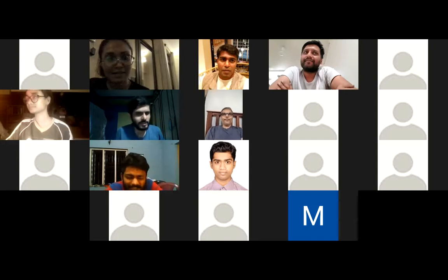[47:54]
So the thing is that last day I just spoke to a DMO, district medical officer in our place. She asked me what the certification of our device is. If we are providing any device, it should have some certification. That's what she asked me. Last time we had some face shields and all, and they were okay with them. But in the case of the oxygen concentrator, they told me that certification is a must.
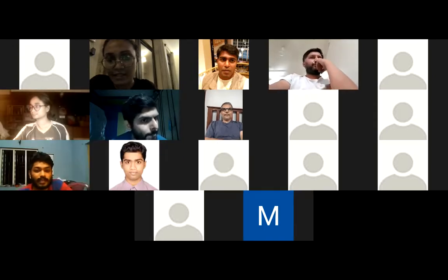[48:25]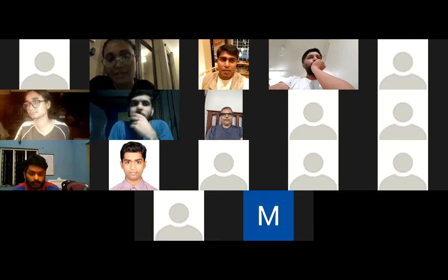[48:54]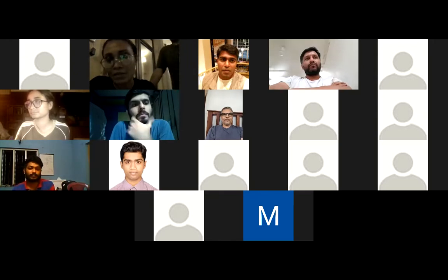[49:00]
No, I'm aware. I think you messaged me as well, and I think we are in conversation. Just a quick update on that. We are in conversation with Manipal Hospital Group to get this tested at the hospital, hopefully soon, and also with Ramaiah Hospital in Bangalore. So a couple of big hospitals are willing to test it out. Hopefully, if they can say okay to it, that could be another way around this whole thing, because medical grade certification is obviously a very tedious process. It's not going to happen in time, and hopefully we're able to find ways to figure this out, because the need is pretty dire at the moment.
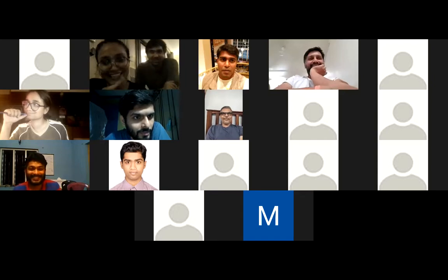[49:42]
Even the ones from China that are coming in, they're not medical grade oxygen concentrators, by the way. They're all recreational use oxygen concentrators at the moment. Either they're recreational use or industry use. Very few of them are medical grade. Even the Philips ones are not medical. Yeah, actually, they will only be questioning it if it's made in Kerala or maybe elsewhere locally. That's exactly what we need to change, right? That's exactly the narrative that we're all working towards changing. We want to change the idea that it has to be imported to be sure, and that something made locally shouldn't be usable. That's important, and we're working on that.
Okay, guys, before I close it, Priyank, your hand is raised. I don't have an update. I have a question. Somebody said that we have to dry run the device for 24 hours. I was really afraid that I shouldn't be doing that without Zeolite, so I'm sitting idle on the machine for the last 3 days. If somebody can just document how we can dry run it? Somebody said that you can use ATA, and Vaibhav said that we just dry run it without Zeolite. I'm sitting idle with the machine for 3 days without Zeolite.
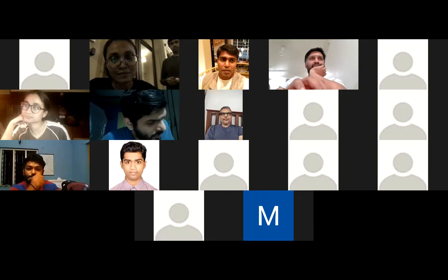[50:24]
Zeolite is coming tomorrow, but I want to try and test it. There is no specification, nothing. Can you guide? Because I know almost four teams, and Gujarat also, who are almost on the verge of finishing, but they haven't started the device due to the fear of pressure and everything. There may be leaks, there may be a blast.
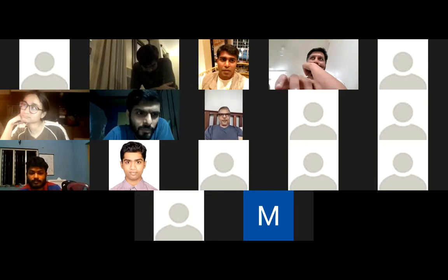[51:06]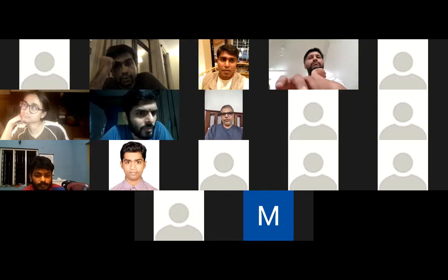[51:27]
So can we document some kind of tutorial? Quite quickly, just run it at low pressure. Don't run it at full pressure. In our case, the compressor we have is rated up to 8 bar, but we're running at an input pressure of less than 3 bar. The rest of the system was running at less than 1.5 bar or something like that. Most of the pressure wasn't really building up because the outlet was exhausting to atmosphere, so pretty much an open-ended system. But we still found a couple of leaks, which we were able to take care of.
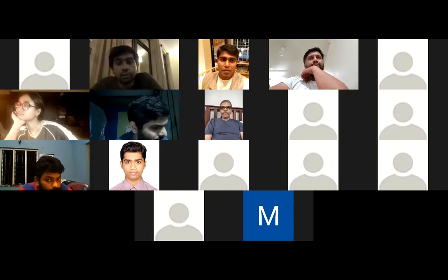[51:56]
So I got a little idea when you were talking. I will try it, but there are a lot of people who will just try it directly on Zeolite, and you don't want them to do that. So just an advice or a tutorial: once you have built it, you should do this first. A lot of them are just waiting for Zeolite, saying once we have Zeolite we will switch on the machine, but they don't know that there are leaks or humidity. They'll make mistakes.
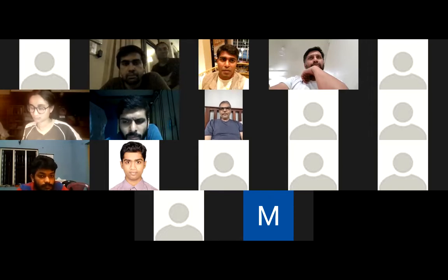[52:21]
Yeah. One more thing I would like to add to what Anul said: you can do a few tests. We can write those tests, like a shampoo test to check for leaks. There are multiple tests that I've documented, and I would like to share those. These are the basic steps that you can do before starting with the Zeolite.
Yeah, something like that. I also tested with shampoo. I put the copper coil into water to check for leaks. So I've checked for leaks, but I want to check whether the whole machine is working properly without Zeolite. Then the Zeolite comes into the picture.
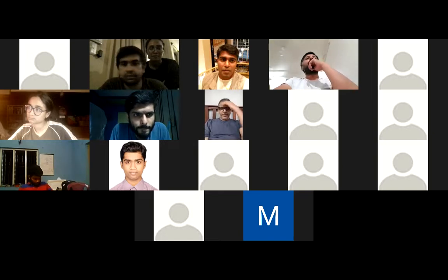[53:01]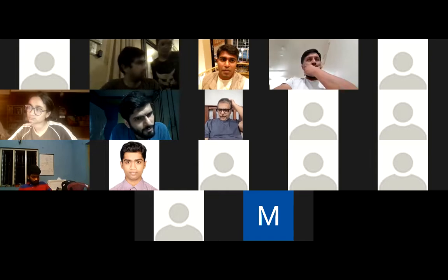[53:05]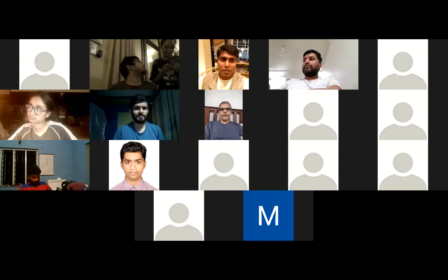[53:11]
Yeah, I agree. It's a good way to program your Arduino and make sure it's working, check that the relay is operating, make sure the solenoids and all your valves are working, stuff like that. So I'd recommend you just run a dry test without anything first. Then if you really want, you can even try it with the ATA. In our case, we were able to detect a couple of leaks. One was small enough that we had to use the shampoo trick to identify it, but we fixed that as well.
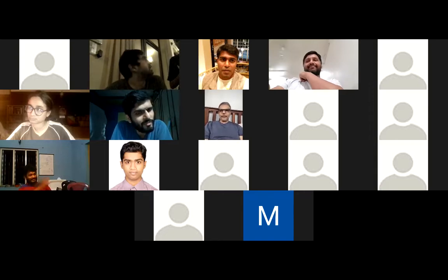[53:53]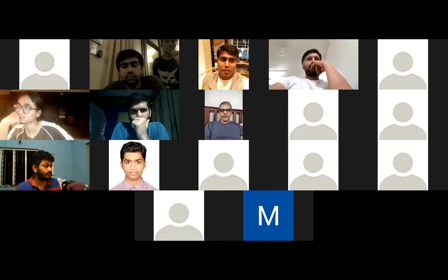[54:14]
In electronics, we call it not having to release the magic smoke. If you don't want your electronics to release all of its magic smoke, you have to run several tests to make sure things are all right, polarities are right, and so on. So it's basic engineering practice, really. You don't want to turn on a system without testing its submodules. I'm sure the documentation team will add it once we make a final functional prototype and all of its documentation.
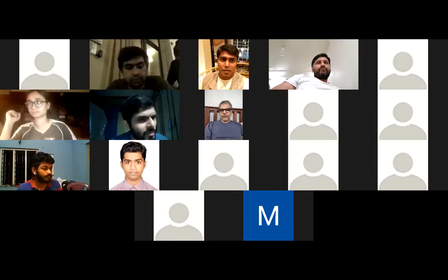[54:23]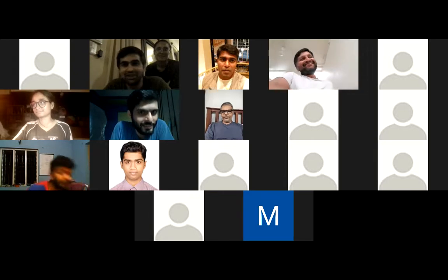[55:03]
Okay, thanks. Between us, one of the things we're planning is a series of videos explaining certain hacks that you might have to use, or which can be useful when you're trying to build something like this, especially if you don't have access to special tools. These are all the things we are working on to make it easy for everyone else to follow instructions and not make mistakes. All the jugaads that we do, we'll share with everyone. Yes, absolutely, but in return, please share your jugaads as well. I think that'll be super fun, so we all have good jugaads documented together.
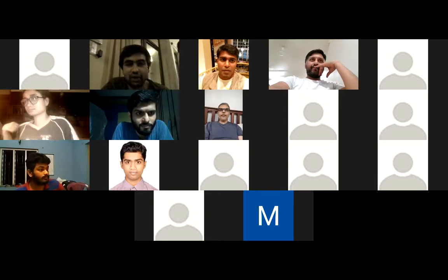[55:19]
But before that, Abhimanyu and Priyank, what I would request you to do is draft the kind of tests we can do, maybe a little document that we can start putting together, and then we can add to it and share it. Yeah, Abhimanyu, take the lead. Yeah, I'll also try to do that. Priyank, Abhimanyu, please take the lead. Maybe you can sync up later and put some of these down. That'd be great.
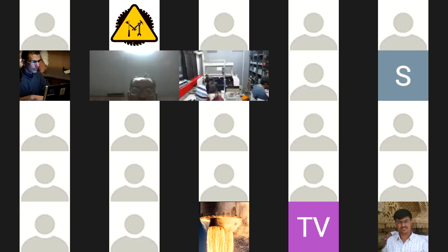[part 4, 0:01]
much more time. All right, let's go. Let's get started. Anul, would you like to set some context and give a quick update? And then after that, we can go around the table.
All right, so this is one of the first that we're having, but we plan to have some more. The idea is to discuss technical issues that we're having with the systems that we're building, ask if anyone has insights or solutions for it, and try and collectively figure out solutions to common problems and so on, mostly related to engineering. If it's, I think, sourcing or something, it's best that we take it to the sourcing group, for example.
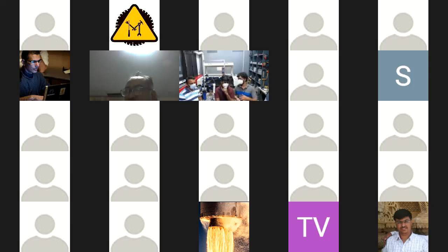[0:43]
So this is purely about building the kit and making it work so that we get between 15 to 25 LPM at more than 92% concentration. So that's the context. We can discuss electronics as well, so that's not an issue. But I request anyone who needs to say anything to keep it short because we have a big bunch of people here that will then have a say.
Baba, do you want me to update on Goa Lab status? Yes, that would be great. Thank you, Anul, for setting all the context.
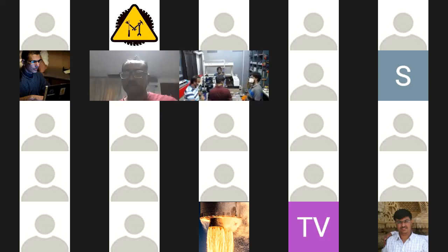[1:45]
Perfect. All right, so just for everyone who's signing in, at Goa Lab, we have built the Oxikit completely 100% out of locally sourced parts. We have ordered an Oxikit kit from the USA, which was, I think, ordered more than 10 days ago, but I'm guessing we are not receiving it until at least the 18th. As of last tracking, it was still in Amsterdam. So we have a locally built kit here in Goa. Based on whatever restrictions we have with sourcing, we were still able to manage to pretty much build it.
We've been testing it off and on for the last 2 days, trying to iron out some kinks. There were a couple of leaks here and there which were fixed, and some other tweaks. We are putting in fresh orifices because we found the orifice diameters were not equal, so we were having unequal pressure in both tanks and so on. So a couple of those things.
The main thing we're trying to tackle right now is to remove humidity from the ambient air before it reaches the sieves. So that's what we've been working on. We've filled our sieves with 2 mm zeolite just for test purposes because we want to see if the system works or not. But eventually, once we receive our 0.4 mm zeolite, that's what we plan to run on.
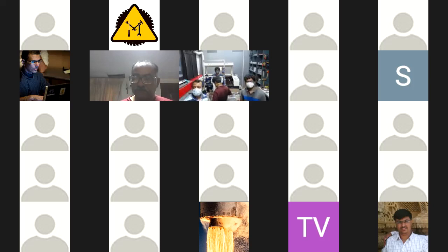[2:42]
As of now, our progress has been hampered by the fact that we still don't have either an oxygen sensor or an oxygen meter. I believe we are going to be receiving it sometime tomorrow, hopefully. So if things go right, by the day after, we may have some updates, or maybe even tomorrow if the gods shine down on us.
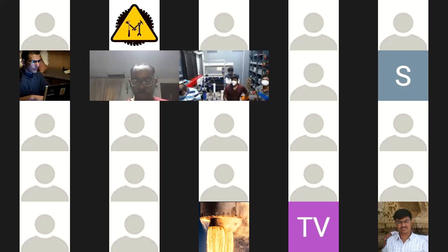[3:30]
Yeah, so I think the main issue generally, I would say among the whole group, is what type of zeolite to use in terms of grade and how it affects the performance of the device. The other is what kind of compressors we want to use to make sure that we reduce the humidity. So humidity control is our second big challenge, I'd say. And the third challenge is a proper user interface for the instrument, which allows us to look at the important parameters, primary among them being oxygen concentration, which is currently lacking, and without which I think the Oxikit cannot be used as it is, unless we have a display of what the concentration is doing.
So a couple of folks in the electronics group are working on that. I'm hoping some of them will speak up. There's probably Gorbachev or Ashish or others here. So they'll let us know what they will do. But I think as of now, that's the update from Goa. Did I miss anything, Baba? No, I think that's pretty coherent.
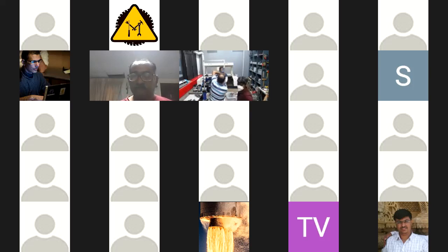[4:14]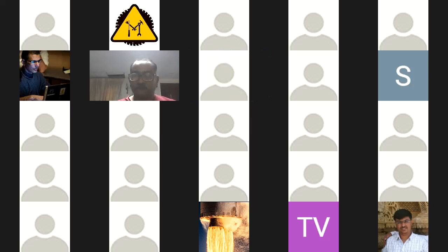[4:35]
Just one more safety announcement. While everyone is building these, once again, guys, please be very careful. Make sure that you're following the instructions, making sure, especially, the sleeves are nicely tight. You're playing with a lot of pressure. Just before testing, make sure you're following all safety instructions to not allow any explosions to happen inside the lab because the pressure is very high.
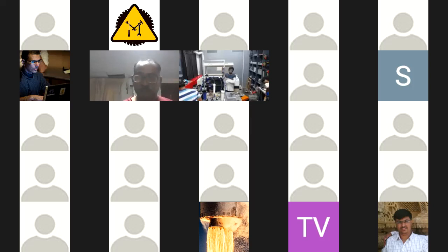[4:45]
One tip from me for those who have probably built but not yet tried switching it on or running it is to see if you can run it at the lowest possible pressure without filling the sieves at all.
And first of all, check for any leaks. The soap or the shampoo test is useful to find those leaks. So try and use those, and try not to pressurize it a lot to start with. And then you can start taking the next steps as you progress along.
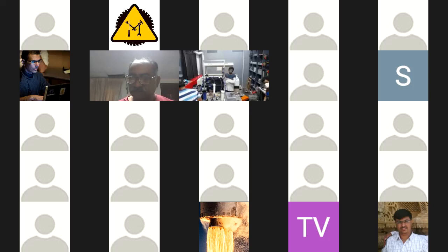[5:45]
The other tip is also to make sure that you wear a proper face mask or protection while you're handling the raw material. Because despite what the label says, that it's food grade and approved and so on, the dust from the zeolite itself can be harmful and or carcinogenic. This is something that we've learned from talking to some of the experts at Stanford and MIT. So regardless of what the research papers say or anything else, it is wise to take the precaution. If it is not carcinogenic, that's fine, but let us assume it is and proceed accordingly in terms of protection.
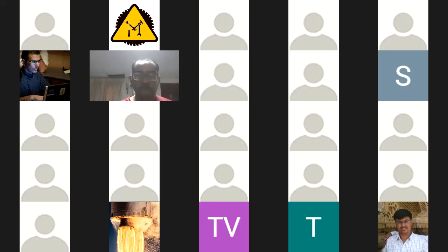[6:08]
So, playing with pressure and taking care of the dust. Make sure you take care of these two safety precautions primarily.
Good, bye. Yep, that's pretty good for now. I can talk a little bit more later. Let's get an update from everyone else real quick. I suggest those who want to give updates just raise your hand using the panel, and we'll ask each one of you to do it sequentially. Then you can unmute and talk. Go ahead, Krishna. Great. Yes, thanks. Yeah, hi guys.
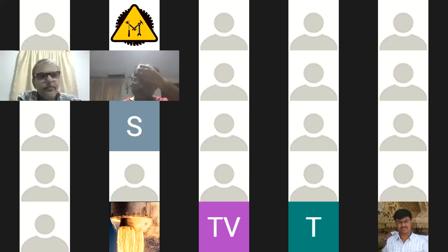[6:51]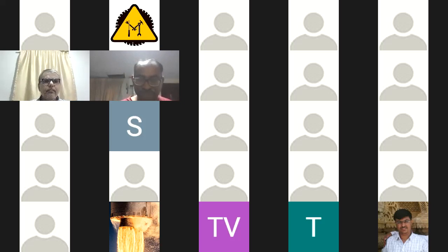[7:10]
Updates from Chennai. So we have achieved like 40% concentration, but we have a larger zeolite, which is like 5.5 mm, and we observe that when we increase the pressure to say 4-5 bar, the output increases. But because the burst pressure is at 10 bar and our compressor is also rated at around 5-6 bar, we don't want to take the risk of increasing the pressure. So that's the update from us right now. And in terms of humidity, we have not tested because we don't have access to a humidity sensor and Amazon services are not working in Tamil Nadu. But yeah, this is the update, but we are waiting for.
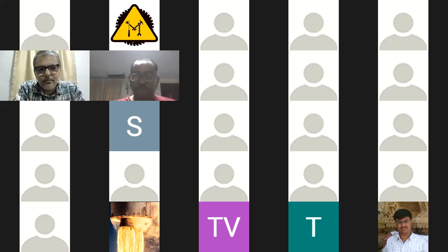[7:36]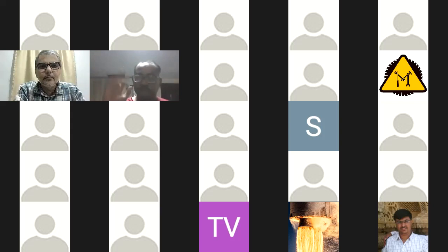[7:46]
Awesome. Nice. Okay, who's next? Yeah, Abhimanyu, go ahead.
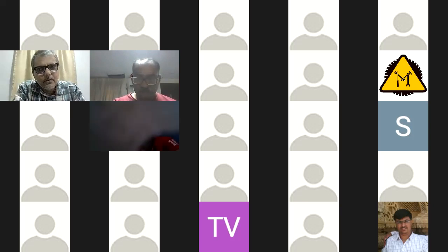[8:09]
So I have a few engineering questions. Who is leading the engineering thing? Do we have any scientists out there, for the basic PSA cycle and all that? I have a few questions on that. So, Anul, you want to answer? We also have a few scientists joining.
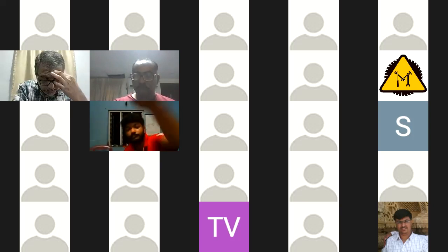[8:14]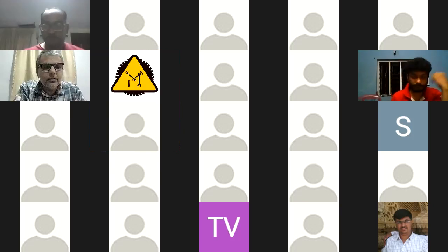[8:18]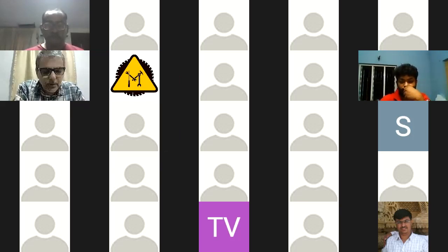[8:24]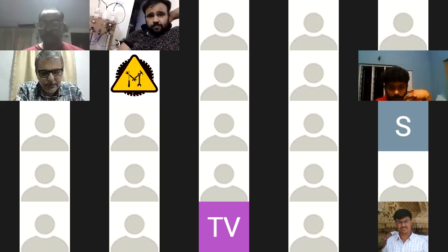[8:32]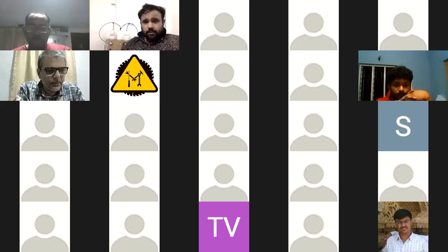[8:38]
Yeah, so Abhimanyu's voice is cut off, but I think his question is, do we have some experts on this domain over here? We have a couple who are not, in a sense, part of the engineering group, but whom we have access to. Vijay from Fractal has access to a separate group where some of the key subject matter experts have been put together. They are not very comfortable being on an open platform, so they requested that we reach out to them when needed. So we are allowing Vijay to take care of that, and if we have any issues, I think Vijay would be the point man to pass your question on to them, and we'll come back with answers. We've also been talking to folks at Prakash Labs and other places. So those are people we have access to.
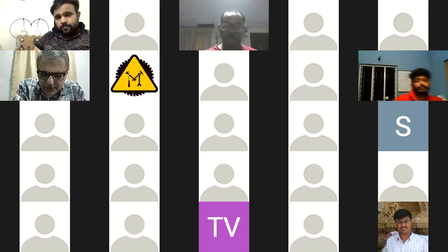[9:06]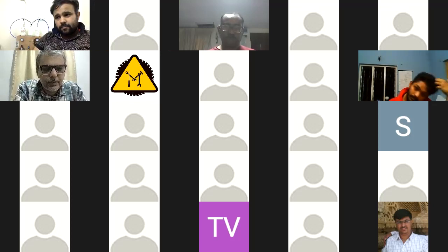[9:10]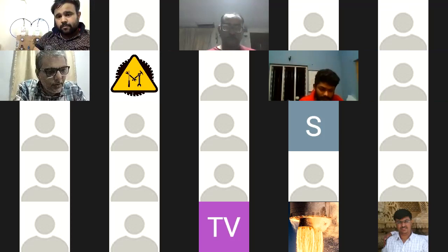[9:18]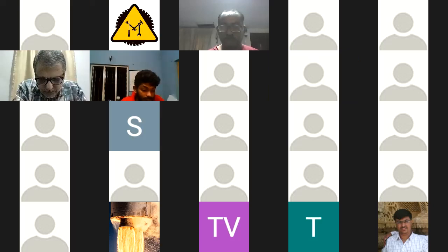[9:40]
Also, the Fab Lab Foundation has joined in. So folks like Eric and others are on board. They have a lot of experience with building stuff, especially medical and emergency medical devices during the last year. So we have access to those. But if the question is, do we have someone directly here right now? Immediately, no. I'm not sure. I haven't seen the list of everyone who's joined, but most likely we can reach out to these folks when needed. From our side at least, I believe Anul is leading the engineering side, and that's one great point of contact to disseminate information.
Also, fair disclosure at this point, and as I also mentioned in a video a couple of days ago, I had no clue about how PSA systems work. So we are learning on the fly. We don't consider ourselves experts, but many of us bring many years of experience in engineering or handling problems and solving issues. So this is just one of those. If there are things that we don't know, we are learning as we go. So we are quick learners. That's what makes this group so fantastic.
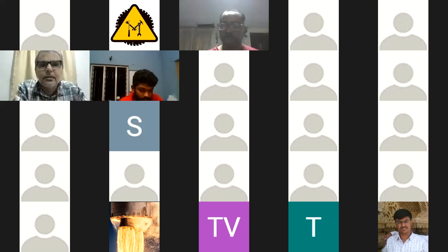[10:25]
Right, amazing. Who's next? Krishna, your hand is still up. Do you want to have another update or something?
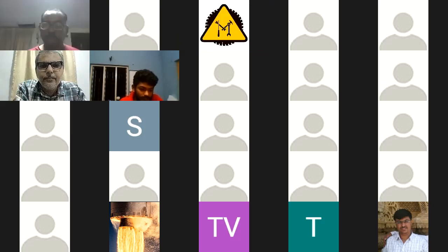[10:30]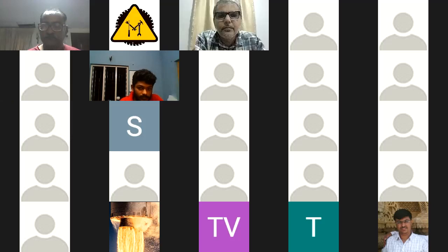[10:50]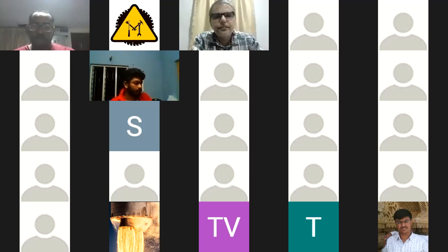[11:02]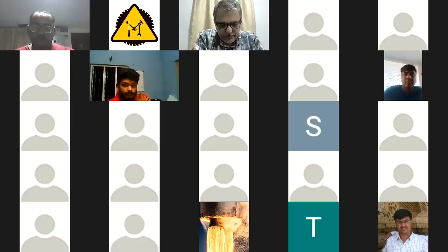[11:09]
Yeah, so I think it was by mistake, sorry. Okay, all right. Just to add to that, Professor Neil himself has joined. Also today, Ramesh Raskar joined the group. They both are from MIT Media Labs. Then Manu from Prakash Labs has also joined. They're all joining and helping out in whatever ways they can. We also had a call with Manu Prakash this morning, and they've been very helpful. So we can connect anyone, in the sense that if we have certain questions, we can put them to them directly and get more advice and feedback.
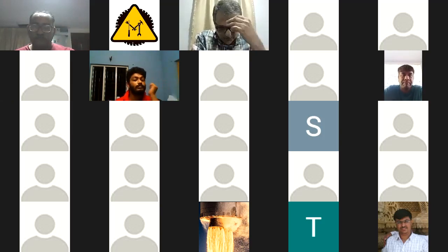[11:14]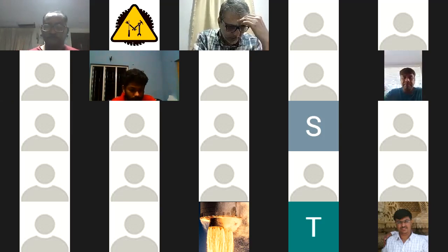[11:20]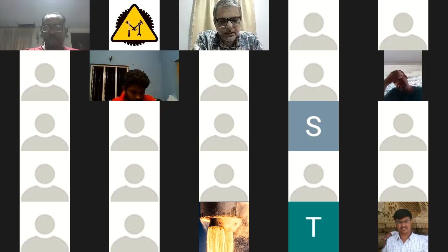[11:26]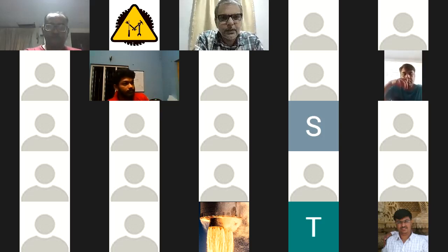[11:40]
Also on the engineering group, we have Adi from the Project Apollo team. He has been extremely helpful. Their project is also a pressure swing adsorption oxygen concentrator, but it's a slightly different design from the Oxikit. But there has been some synergy between Oxikit and Apollo, primarily with regards to some of the simulation and other issues. So Adi has been pretty helpful. If you ping him on the engineering Telegram, when he is able to, he will definitely be able to help and get you unstuck. So that's that.
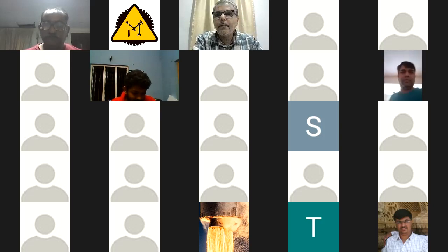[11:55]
All right, who's next? Gorbachev, do you have any updates from Bombay?
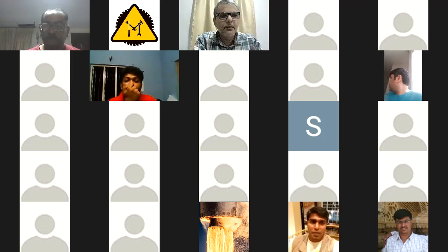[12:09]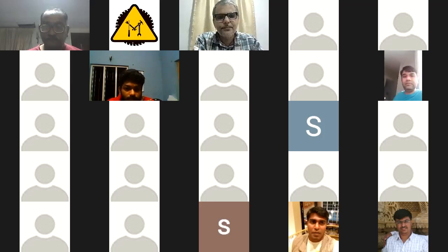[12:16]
So I just came back from Buddha. I made sure that the shipment reaches you tomorrow. And I'm just checking the electronics right now. Probably I'll fill up the sieve tonight because I'll be away from tomorrow. So I'll want to do some concentration test tonight. So hopefully I'll have some results tomorrow morning. All right, go for it and good luck.
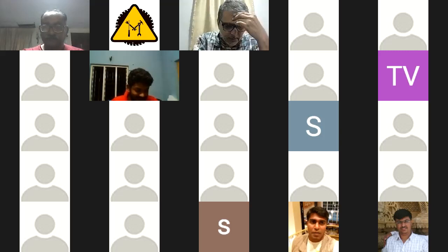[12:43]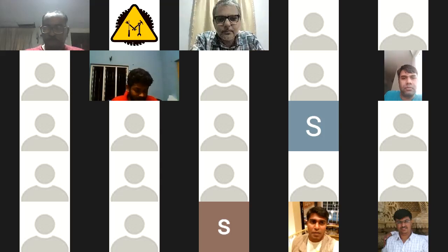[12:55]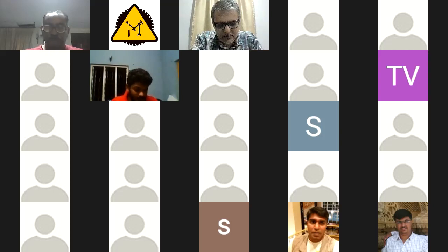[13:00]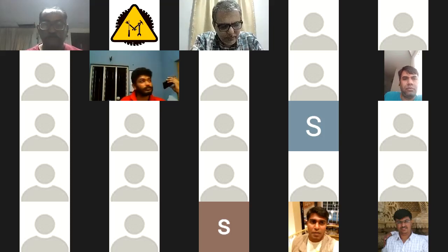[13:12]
Who's next? Abhimanyu, do you have any update? I believe you've been using nanoparticle zeolite. Yeah, sorry, I got cut off. The battery got drained. So my update is that I will be sharing a Jamboard wherein all the prototypes that I've made, all the different nanomaterials, the different sizes, 1.6 mm, 0.4 mm, even varying the size of the tar, I've documented all that. We're sharing that, and I'm in constant touch.
I'm in constant touch with all the makers who are at the advanced stages, and I'm benchmarking everything so that the data that we have anywhere in India, according to Indian benchmarking standards, we can read each other's data and get insights from each other's data. So that is one important thing I am concentrating on: whatever I've built right now, I'm making it standardized so that you can also see what the results were using different nanomaterials, different types of zeolites, different sieve structures, different volumes, different pressures and all that, so that you can have a view. So this is what I had.
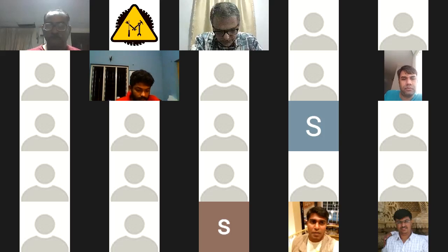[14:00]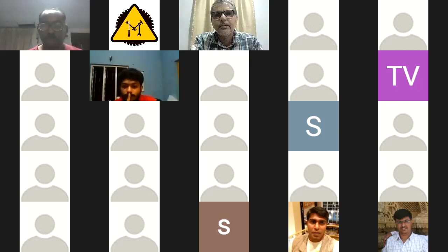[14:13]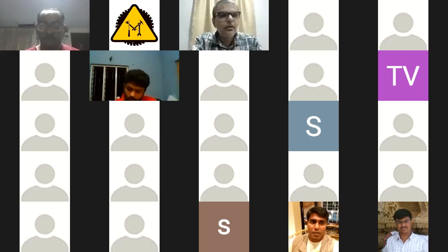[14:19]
That will be super helpful, and I think in the coming days, once we have a little bit more time. Can you mute your mic, please? Sorry, Anul, unmute yourself. I just muted everyone.
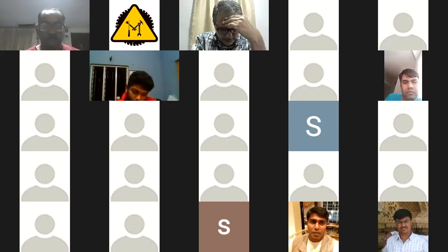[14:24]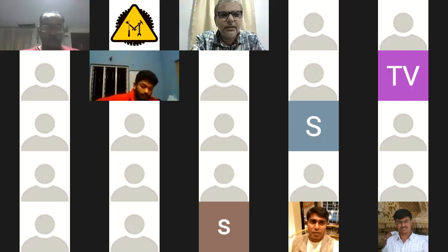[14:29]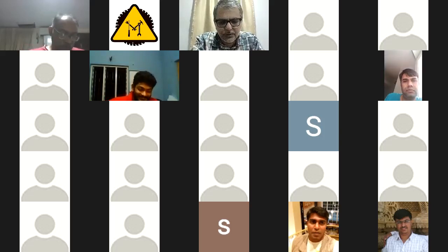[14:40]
Right, sorry. All right. So that's awesome, Abhimanyu. I think that's going to be really helpful once we make some progress on this. And once we have a little bit more spare time and breathing time, what we plan to do is set up some kind of a framework that allows everyone to easily share their device engineering data, at least the major parameters, so we know who's running what kind of configuration and what their results are. As of now, apart from Abhimanyu, there are very few people.
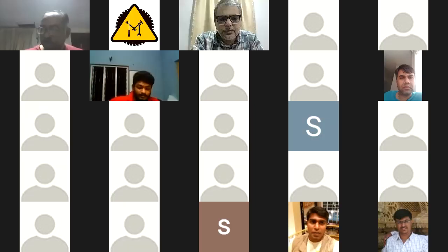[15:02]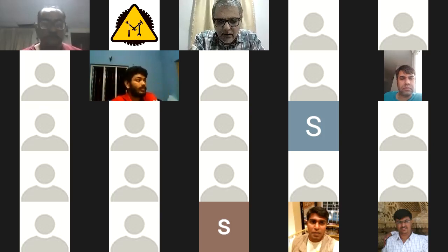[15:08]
I think Krishna has something, and Bhagavatar is still in the middle of doing many other things. Krishna from Chennai helped me in building this thing up. We had a discussion, and then we made this.
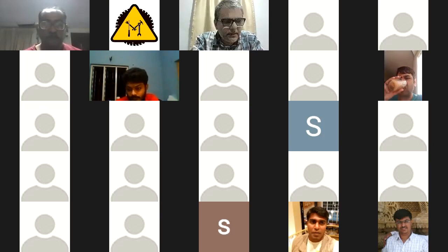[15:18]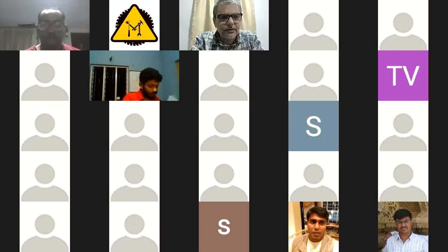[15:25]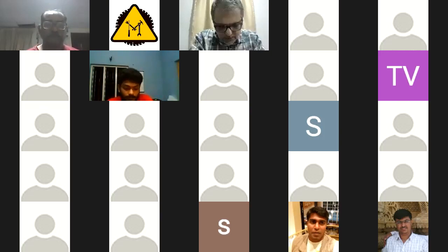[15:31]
That's awesome. I mean, that's what this whole group is about. We're going to help each other get unstuck. So sometimes, Abhimanyu, when you reach out to one of us and we don't respond, don't feel offended. It's just that we might be busy or doing something. But use the Telegram group. That's the best way of communication. We are here to support the best we can. That's awesome. Great to hear, Abhimanyu and Krishna. That's exactly the spirit of the entire collective.
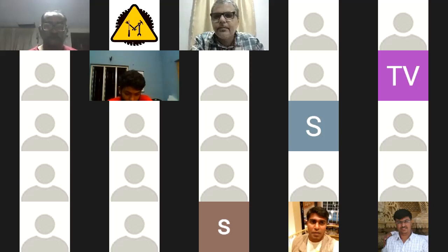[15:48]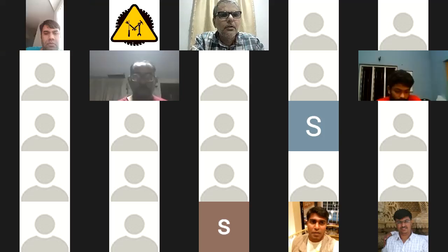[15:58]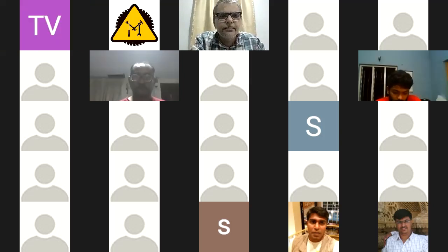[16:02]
Do we also have Anirudh Sharma over here? Yes. Okay, or is there someone else who wants to? Priyank? Okay, Shubh, you raised your hand. Let's see what you have to update.
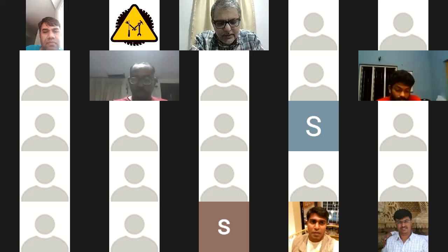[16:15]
This is Abhi. I just have one quick question. Is there a sheet, like a Google Sheet or somewhere you are tracking what the results are with different performances? Not yet. Like I said, we've been up to our necks with the actual practical work.
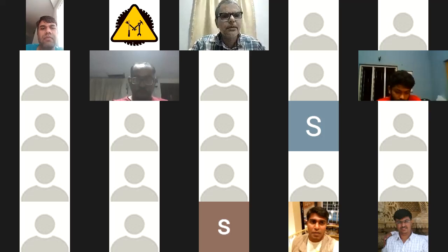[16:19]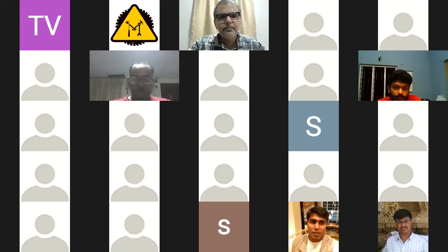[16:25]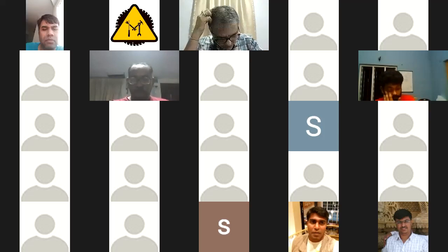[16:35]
So, but that's something that's been toying in our mind for a while. Sorry to interrupt. I am tracking all that. If you need that information, you can ask from me. All my prototypes and all that testing, I'm tracking all that. Just sharing here on the chat group also. Yeah, but we are going to have to organize it in a better fashion, Abhimanyu, because pretty soon.
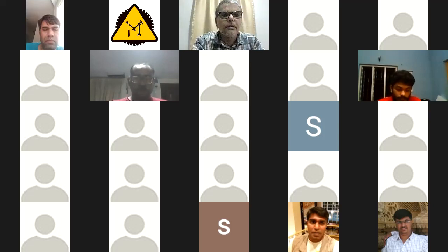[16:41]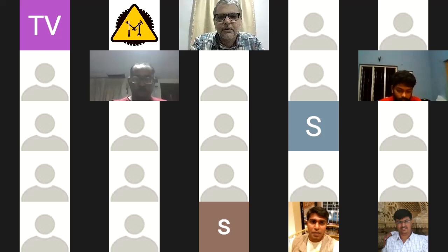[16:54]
Yeah, totally. Pretty soon we'll have hundreds of machines running, so there'll have to be some kind of database solution. Totally. Someone from documentation can actually take this up as a side project or something. That would be awesome. How do we collate the technical data from every machine? And Sanket, there's another guy, Sanket, in this group who was talking about simulation and all that stuff. So I guess he should take the lead, or anyone who has knowledge of simulation.
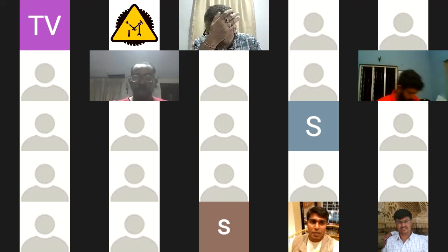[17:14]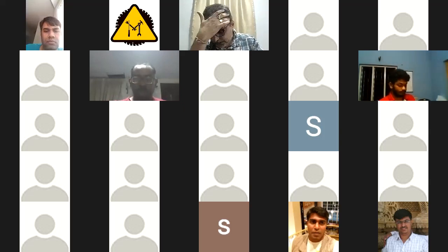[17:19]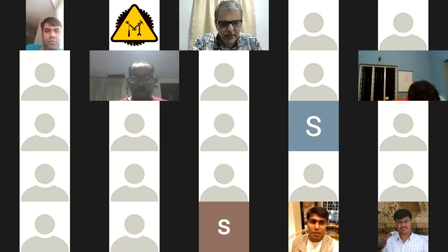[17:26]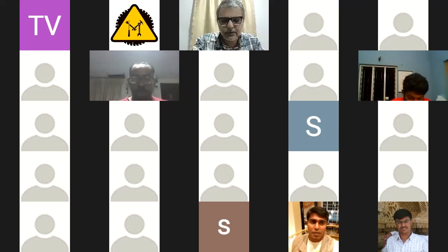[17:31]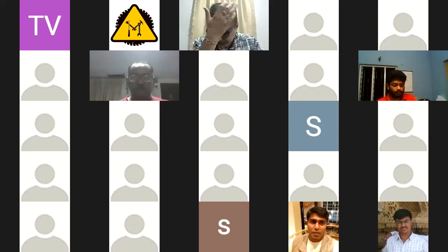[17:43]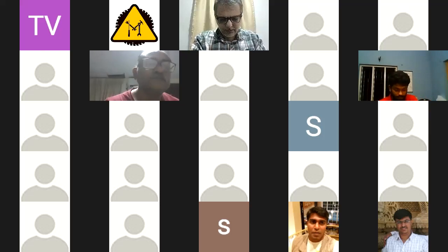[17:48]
I'm going to let Sanket do his thing. He's trying to get the simulation run on GT Suite. I wasn't really aware of that tool, but apparently it's used by a really wide part of the industry to simulate all kinds of things, from aircraft to rockets to cars and everything, internal combustion. So it's well suited for a simple project like Oxikit, but it's going to need some special permissions, which Sanket is working on. So I think let him work on that.
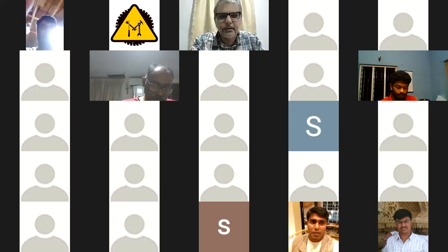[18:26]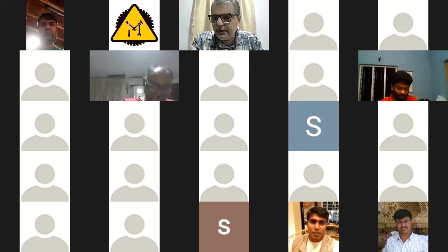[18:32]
We need someone else to take up the database generation part of the machine data that we will soon start collecting, in terms of, okay, Abhimanyu's got so many kilos of this particular zeolite running at this pressure, and so on and so forth. This is the kind of compressor he is using. These are the results. So all of that needs to be gathered as some kind of data points. So let's see, I think between me and Vaibhav and some of the others, we'll figure out if someone from documentation can take this up, as it's purely a database generation exercise with some kind of templates at the moment. So people can just fill up a form and say, here's my data for today, here's my data for the next day.
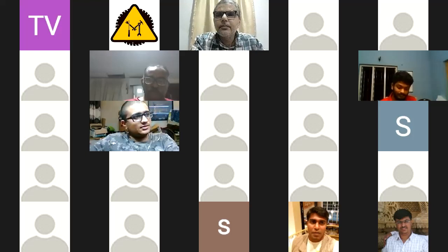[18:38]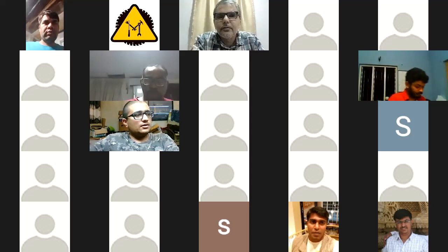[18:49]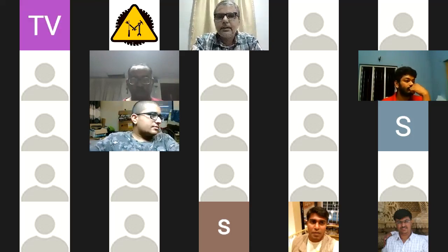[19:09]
Anul, we can take that up. Ashish is saying from the documentation team. Awesome. So we're working on the Notion together, me, Abhi, Bhanu, and Vijay. So we can probably put that up in the Notion and have a digital database. Fantastic. We can do a quick short video call sometime to lay down the parameters and the template. Sure, maybe sometime tomorrow. Yes, sure. Sweet. Thanks for helping on that, because that will be extremely useful once we go ahead, the data that we collect from the machine.
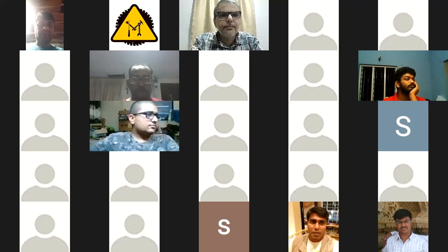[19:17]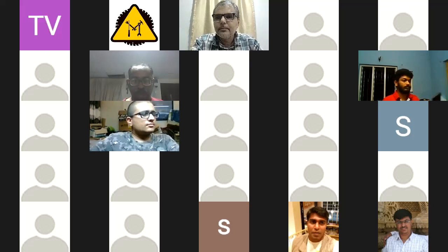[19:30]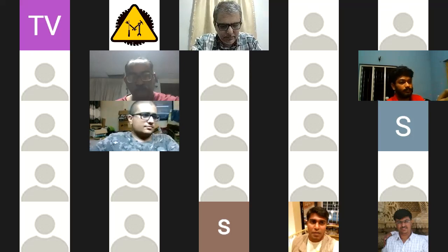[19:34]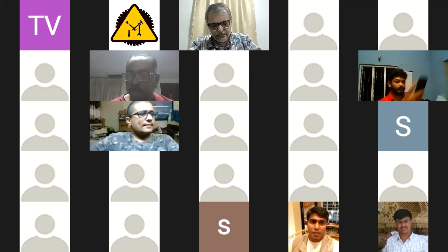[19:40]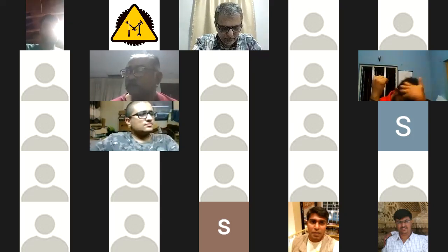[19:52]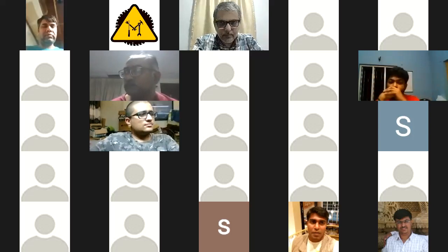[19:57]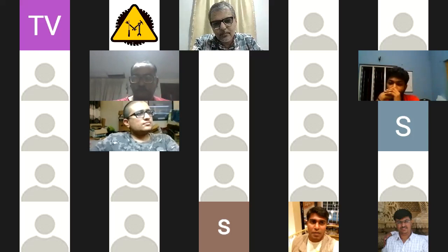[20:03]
Also, one more thing that I'm working on is that I'm from Quality Council of India. So all the time spent today was all about certification and all that. I was going through all those ISO ratings and all that. So we need to think about it the other way around also. All the stuff that needs to be certified, we need to broaden our approach, and if we are not concentrating just on building the Oxikit, but if we want to build some system that should be certified, we need to think from the perspective of what these certification agencies want, what their specifications are. So I spent all of my day thinking all that, and making sure that it gets certified according to WHO standards or the ISO standards or the TÜV standard, or whatever that is.
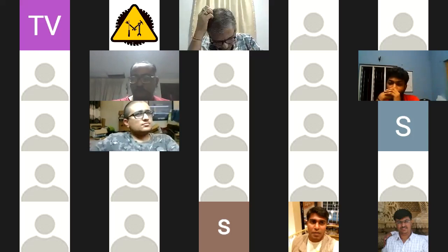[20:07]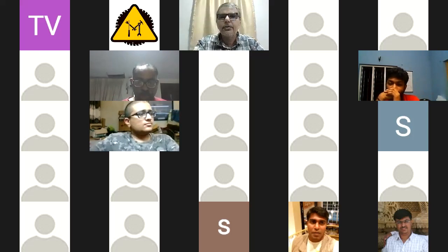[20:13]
All right, that's awesome. That's good to hear. I think you should put your updates on the certification group and make sure you interact with them to see how we can push this forward. We've had some ideas and thoughts and discussions on how certification will work, but I'm not sure if you want to discuss that right now.
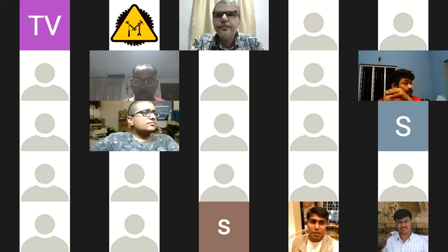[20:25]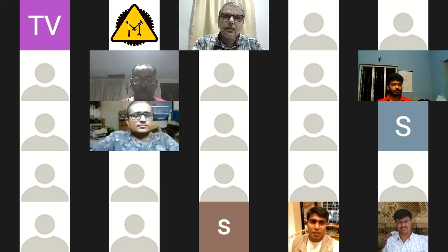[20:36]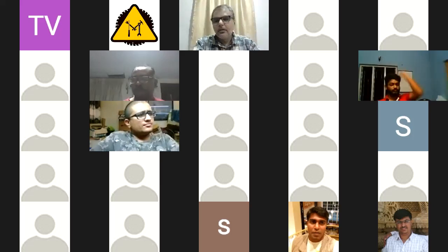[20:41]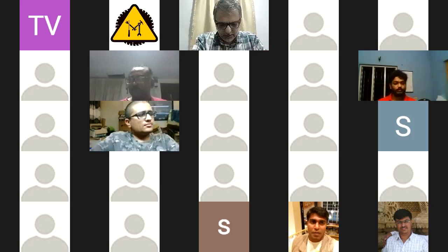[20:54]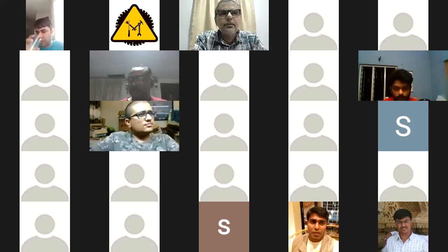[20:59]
Fair. But it would be very nice to have the certification ideas clarity for the engineering group as well. Absolutely. Be able to start meeting those requirements right from the beginning and have that in the system. Yes, same thing that Manu was about to say. At least we need some basic level of certification or approval for this, without which getting the end users to use them is not going to be very easy. So let's think ahead and see how we can tackle that.
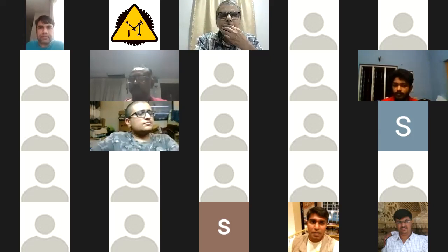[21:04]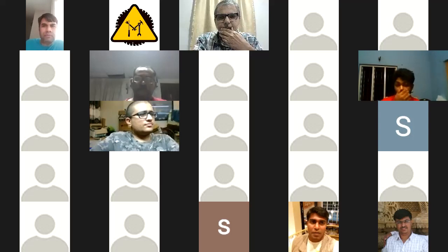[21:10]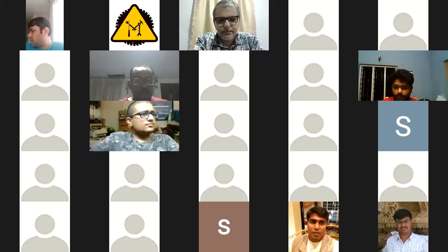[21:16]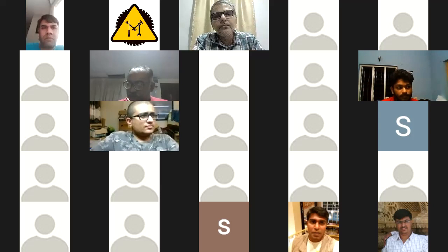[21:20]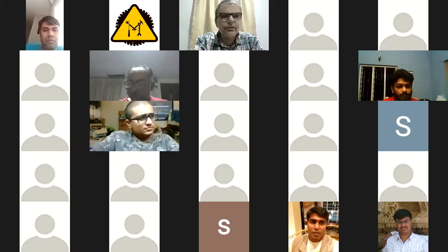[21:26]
All right. Some of the other things. Go ahead. Who was that? Gavish here. I was late for this call, so I'm not sure if I missed it, but did we talk about the noise problem? How are we going to handle that? We haven't. So if you have ideas, pitch them and let's talk about it.
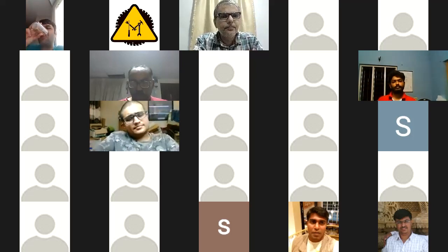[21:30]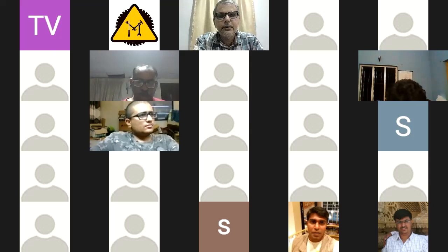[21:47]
Gorbachev? Sorry, yes. I lost you guys. Sorry, what were you saying? Sorry, we lost you. Hello? Can you come again? Hello?
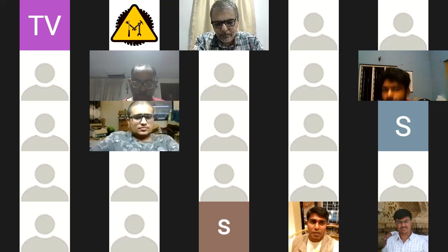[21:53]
Yep. No, I was asking, what is the plan? Are we thinking about noise isolation, I mean, noise suppression and all these things, or how? Yeah, good point. We haven't talked about it, but I think we can now.
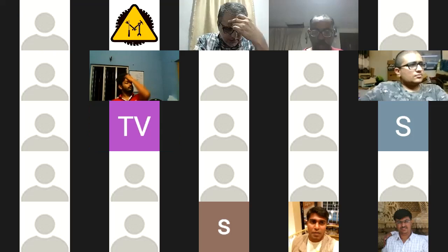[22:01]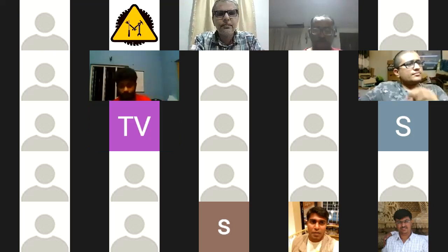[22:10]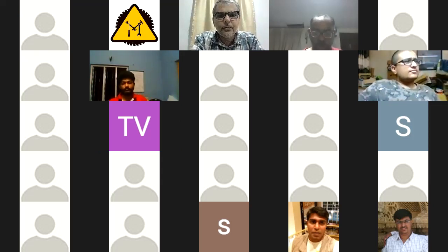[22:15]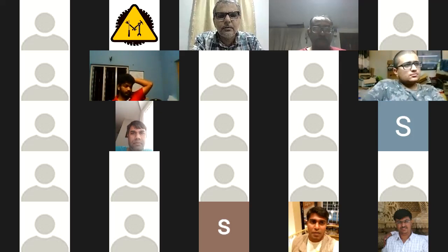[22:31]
The way we see it, the existing Oxikit isn't what we want everyone to build. Right now, all the 4, 5, 6, 7 labs that are building it are just test beds for experimentation. But this is not what we can bring out in the field. So one of the ideas is to enclose everything in an enclosure. Hopefully, if it can be an aluminum extrusion, it will be lightweight, cheap enough and robust as well. And keep the compressor as a separate element of this whole device. So I'm open to what people think about it.
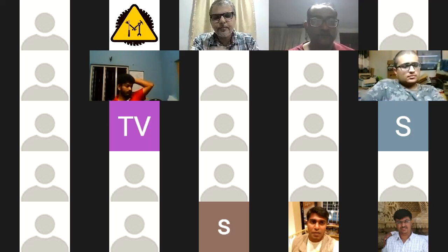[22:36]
The way I see it, we treat the compressor and moisture removal as a separate problem, and assume that the air coming into the system is clean, dry air. So maybe we can have two different modules like that. Anyone got thoughts on that?
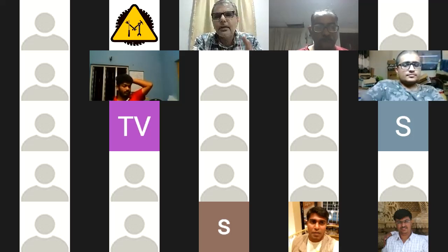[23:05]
For example, Abhimanyu is in Delhi. He's got a very dry climate. So he's been telling us, why are we running so much after humidity? He hasn't had problems. So it's likely that you can use the machine as it is in a dry climate, in the north or in the inland areas. But in the coastal areas, you definitely need moisture separation.
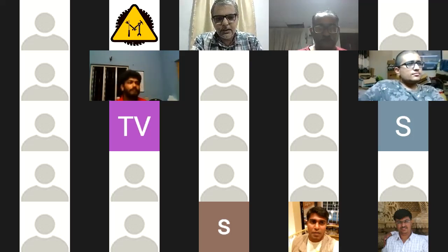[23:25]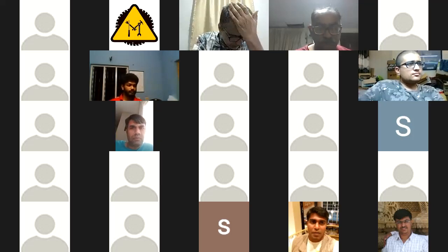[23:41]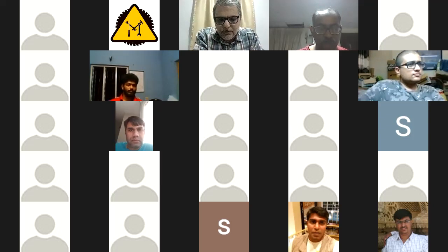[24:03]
And obviously, the compressor, I wouldn't say it's really loud in the sense that it's not that loud. But yeah, it would help if we do noise isolation. The other problem that noise isolation brings in is, if you put noise reduction panels around the compressor or whatever is making the noise, then you also have to deal with how to tackle heat that's generated inside. So we have to balance the two and see which is more important, keeping it cool or reducing the noise.
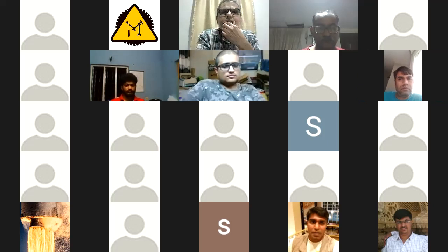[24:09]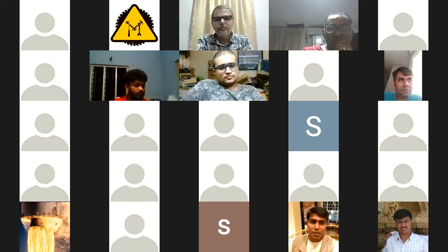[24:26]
Actually, I have something to say about noise separation. As you rightly pointed out, we spoke to some doctors who said that if there is going to be a lot of noise, they can't have multiple units in the same room, because right now with the increasing traffic in hospitals, they can't afford to have individual rooms for patients. So that is one problem.
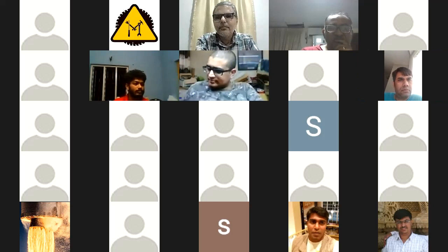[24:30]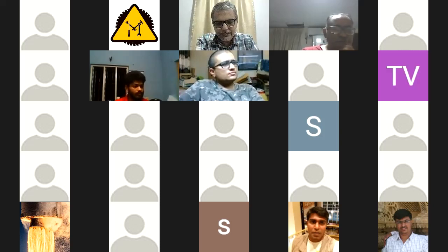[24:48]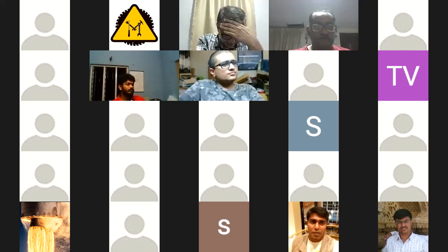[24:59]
And in terms of the solution, along with the embodiment, there are some ways to isolate noise. Like you have double wall structures, and then you insert PU liquid foam inside. Yeah, practically it works, but it's going to increase the cost. Yeah, so that is the problem with that. Yeah, we have to be very careful. As engineers, we can suggest all kinds of solutions, but in terms of cost...
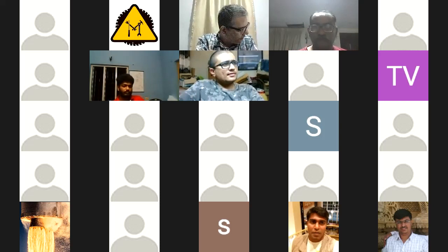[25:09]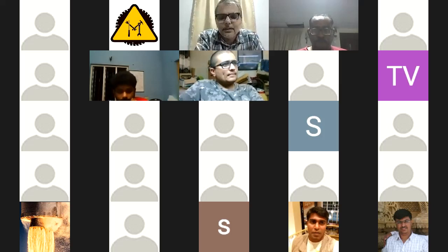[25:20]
Raghavendra. Yeah, go ahead. Who was that? I have something to say. A new joiner to this group today. Harish. Welcome, Harish. Go ahead.
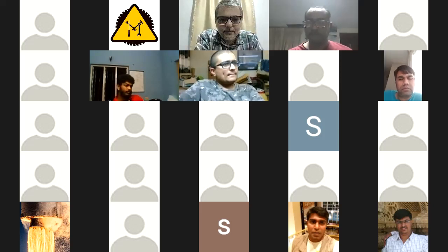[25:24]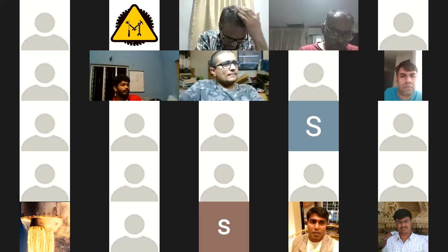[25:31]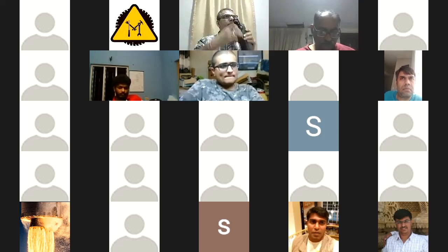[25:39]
Yeah, I have already built the setup and dry tested it yesterday. I am located in Vadodara, Gujarat. Thanks to Priyank, because I had a discussion with Priyank today, and through him only I got to know and get connected to this forum today.
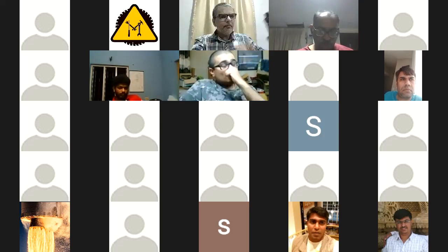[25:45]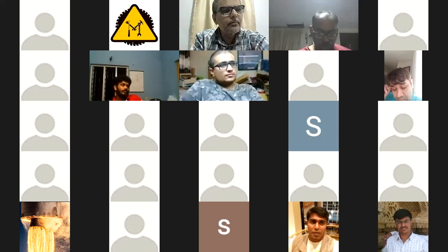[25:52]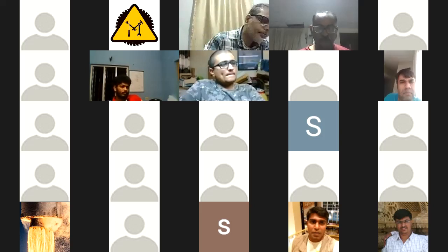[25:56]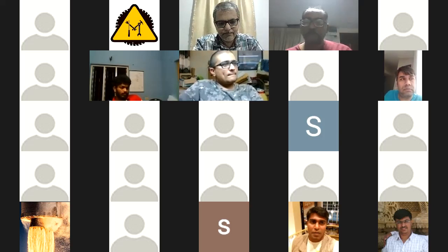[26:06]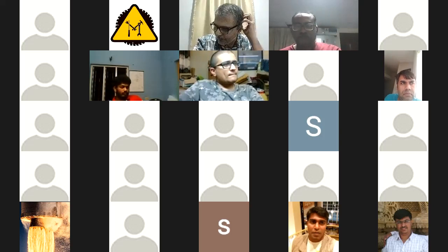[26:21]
So, a few of the trials we are talking about regarding the noise. On the N2 exit, I have placed a so-called silencer, which has reduced the noise level to an audible decibel level. Furthermore, since the setup is built, I'm planning to have a box setup for that small equipment, and noise padding will be placed with provision of air duct intact. So that is the plan, and there won't be much noise, or it will be near silent, once the machine is wrapped or covered.
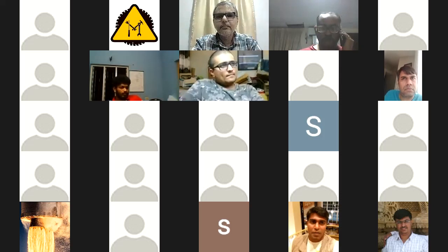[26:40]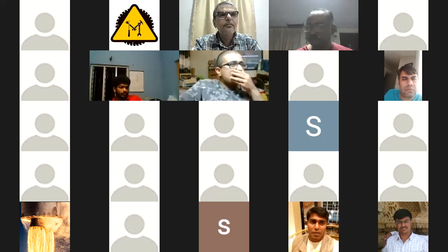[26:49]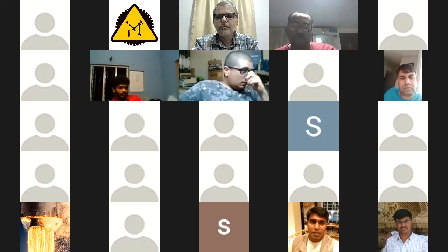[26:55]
Yeah. My trial result was, at 1 LPM I could get 90% purity, and with increasing LPM, when I tested up to 5 LPM, I gradually noted down every reading. At 5 LPM it was giving me a purity range of 75 to 78. Got you. What was the zeolite that you're using?
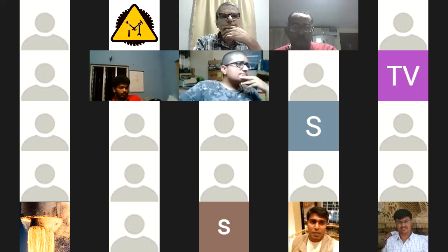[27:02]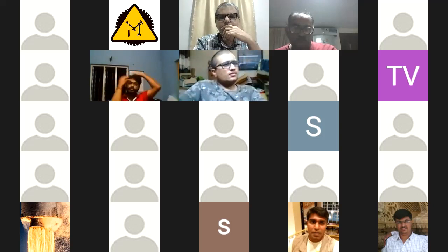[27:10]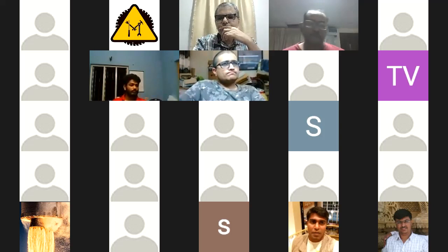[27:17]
I was told through one of the medical equipment supply channels that this is medical grade zeolite. But since my trials are through, I had a discussion with them that I need to know which grade, because initially I was not aware of all kinds of zeolites and the grade performance. Lately I started discovering, since I was struggling for the past 10 days to get the result. When I got through yesterday, I had an intense talk with them.
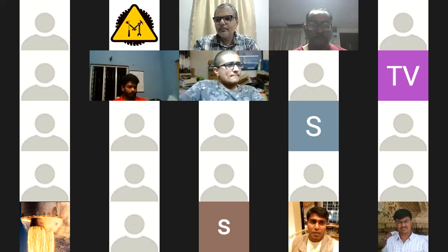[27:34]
They said it is calcium based, and when I searched, it is zeolite 5A. Is that the category I'm using? No, it is not 5A. It is 5039 something. You got it from Sorbit, right? Via, I'm sure it is from Sorbit only, but via a channel. Okay. It's a better grade than the 13X or whatever.
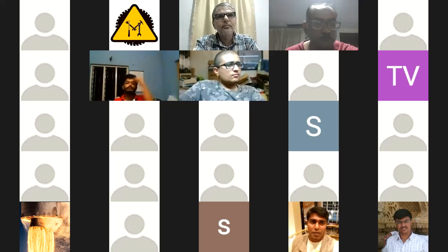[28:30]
Are you using a 2 horsepower compressor? No, 0.75 HP. Okay, that's a great result for that machine, though. So congrats. Yes, actually I started working a month back, and by the time I got to know about the Oxikit and Oxikit people, I had half the build done. I took the program from the Oxikit people, and it helped me fine tune my setup and timing cycles.
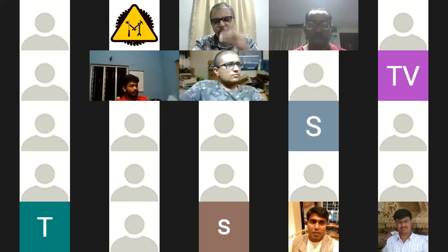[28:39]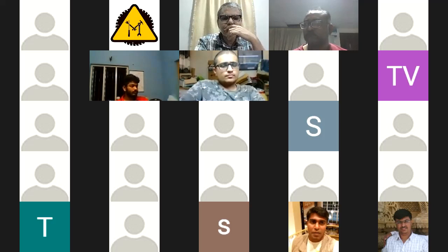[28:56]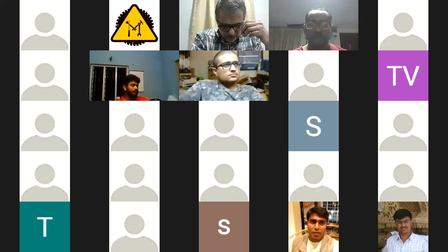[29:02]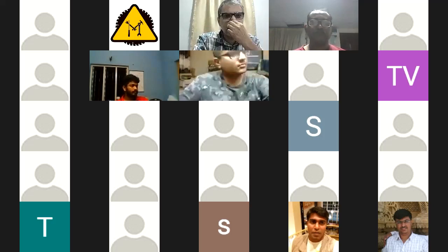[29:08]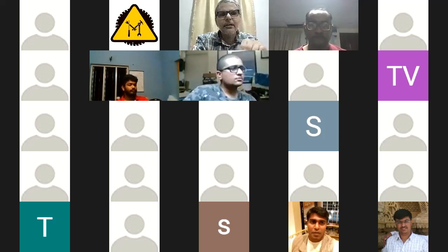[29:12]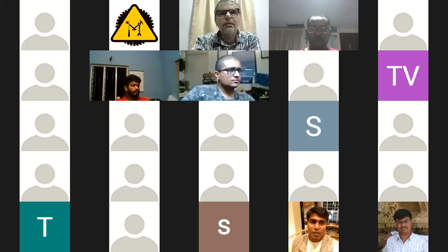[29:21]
Congratulations, bro. Good work on that. There is a central doc, as Abhimanyu was saying, where different labs share experiments with different bills of material and the output they are getting. It will help people relate to their closest bill of material and process and output, so that we can expedite. Just a suggestion for the time being, let's keep our own data meticulously. Once we have the framework in place, as Ashish from the doc group has said, we can all start uploading our data online and have it ready for everyone. But make sure everyone is keeping meticulous notes of what you're doing. Every change you make, note it down, and also note the result of that change.
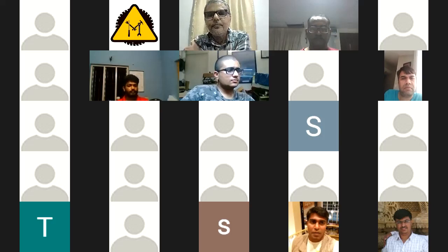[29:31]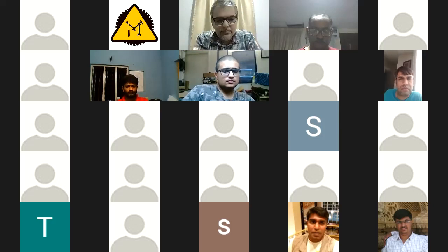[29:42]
Yes, Priyank. Just to add for Abhimanyu, if you have collected any information or technical data, because I have been searching and downloading many research papers and literature on zeolite. Will do, sure. It will certainly help to streamline.
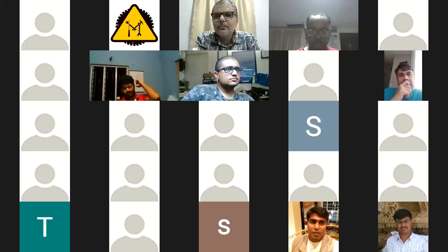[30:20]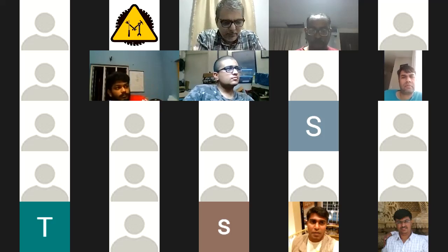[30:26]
The initial Oxikit BOM we were talking about and what I have built are almost different. Same here, Harish. I have also built something entirely different. But what we need to do is set some benchmarking. We might be using the Oxikit for benchmarking, but all the materials, values, gallons and volumes are entirely different. I'm always stressing this point that we use our terminology, our Indian stuff, because we're building it in India, so we need to bridge that.
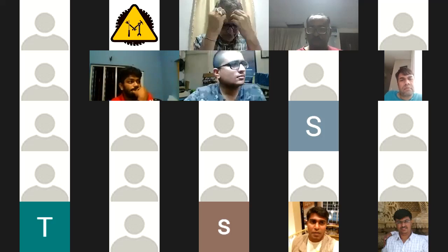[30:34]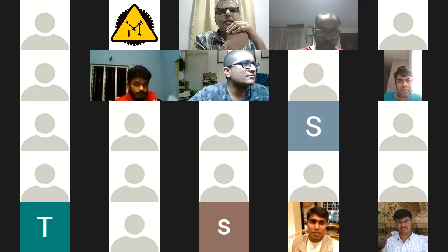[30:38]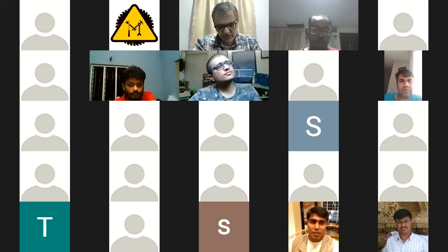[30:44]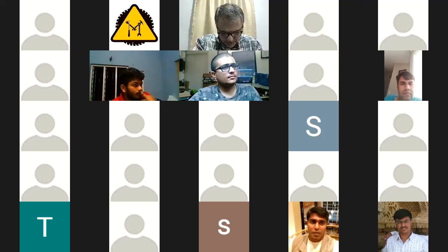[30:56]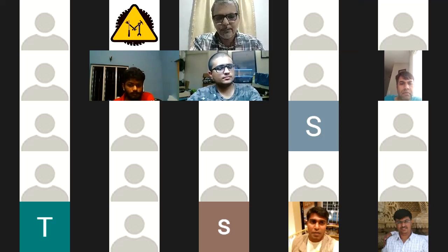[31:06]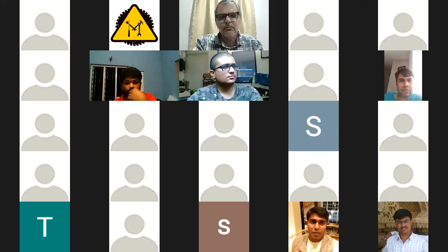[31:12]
Well, Abhimanyu, all of us have built kits using local parts. I don't think any one of us has actually built the original US Oxikit. The one in Hyderabad, I guess he used exactly the same as the Oxikit. No, but he has pretty much built his own. He's built his own sieve chambers, which he has done a brilliant job with, using aluminum cylinders and end caps. But it's a pressure swing adsorption system. There can't be many differences between 10 different systems. Visually, they all look the same. They all have sieves, they all have a compressor, and so on. A car is a car, right? It has four wheels, an engine, doors, windows. They might look different, but they have the same purpose. So I think Hyderabad is not a real Oxikit in that sense.
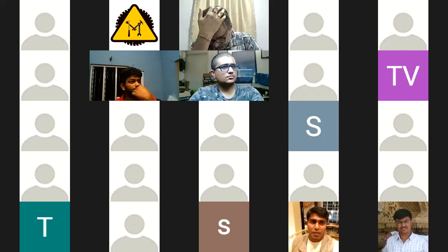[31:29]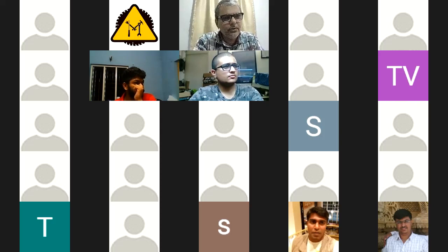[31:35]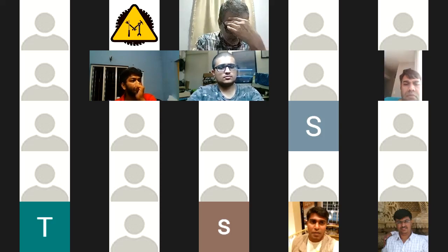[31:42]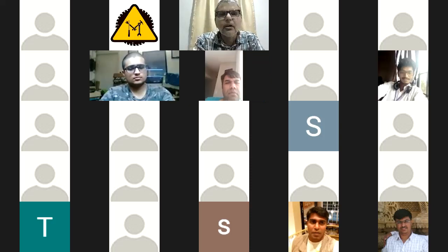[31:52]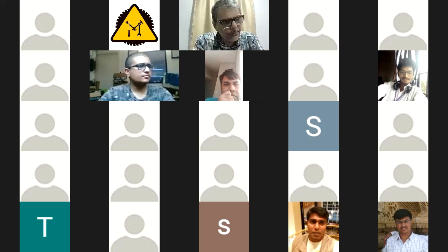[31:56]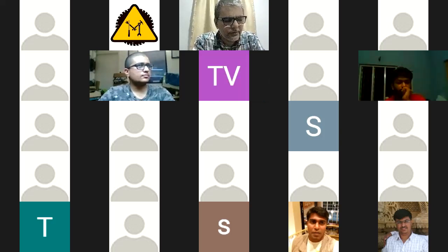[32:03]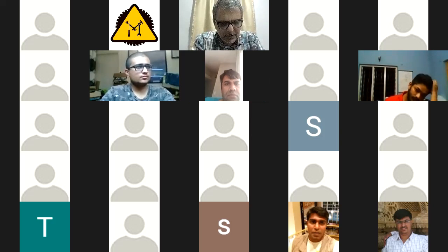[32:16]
Also, I just want a quick show of hands of how many are using tank compressors versus how many are not using a tank, because there are different points of view about the moisture effect with both versions, and also regarding the enclosure, because once you use a tank compressor, things become a little bit difficult. From our side at Goa, we have a 1 horsepower untanked compressor, but that really doesn't help. It doesn't produce enough pressure. But we have an 8 bar 50 LPM compressor, which is what we are going to use because that's what we have at the moment. But has anyone had better results in moisture separation using a compressor without a tank? Let us know. It would be interesting to see the numbers.
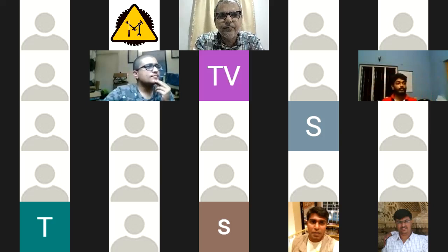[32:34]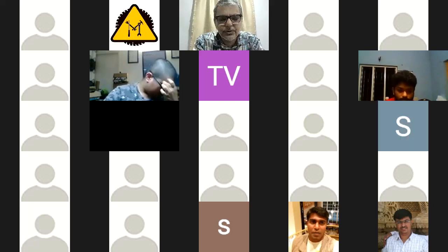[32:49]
So, in Chennai, we're using a tank compressor, and most of the moisture comes out of the tank itself. We have a small opening outlet, and most of the humidity is removed there. Then we have this hydrant where the rest of the moisture is removed, the moisture separator and so on.
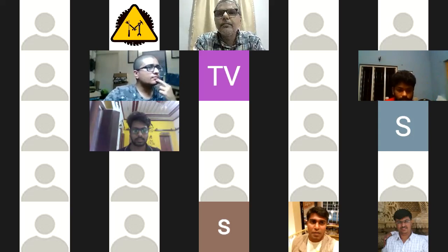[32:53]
Okay, you carry on. Go ahead, no, no, Priyank. Priyank, please go ahead.
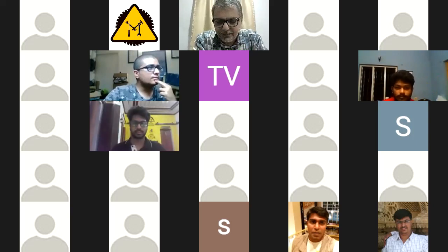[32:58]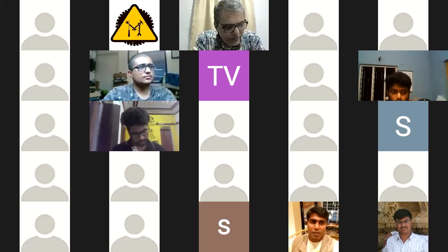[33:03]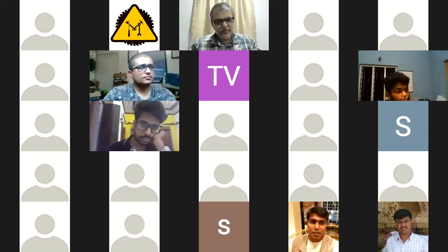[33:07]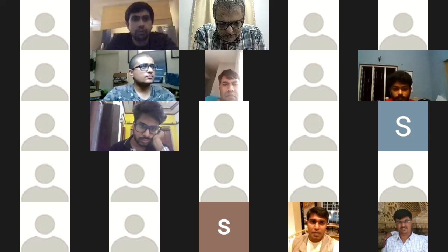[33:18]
Yeah, so I have two or three inputs to give. One thing, I had a BPL Oxy 5 oxygen concentrator at my place, and I removed the cabinet to see what is inside. As people have mentioned, it was a simple 2-layer structure. There was a metal casing inside where all the components were, and a metal casing outside, and between them was just some kind of foam found in commercially available coolers.
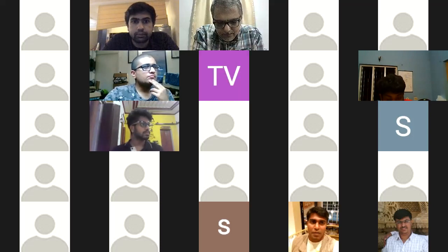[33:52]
It is similar to thermocol, but it is pumped in and takes its own shape. That was all there was in it, and it was pretty silent. Once you remove the cabinet, you just remove three screws, and you get a huge sound from it. So the sound was basically the same. It was just casing in 2 layers of iron with PU foam, polyurethane. So that is one thing.
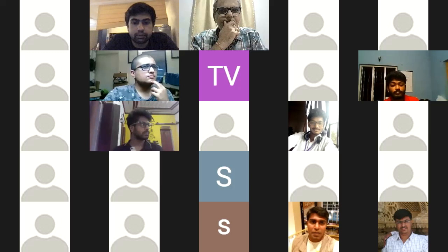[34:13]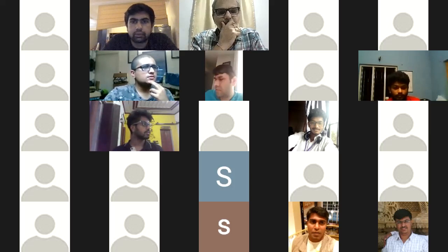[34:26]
Second thing, today I met 2 engineers from Genetics, and I had a detailed discussion regarding moisture. I showed them the hydrant one which we are using, and we are also using the pressure regulator with filter. He suggested one part: there is a 1 micron filter available with Genetics that can be just replaced in the pressure regulator which we are using, and that will remove all the moisture.
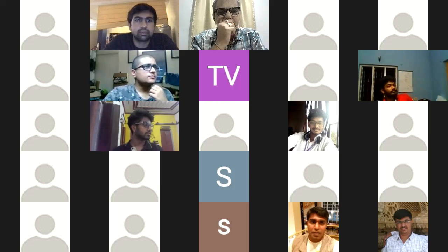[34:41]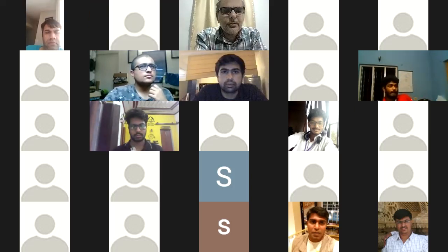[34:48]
By default, it is 25 microns in the company's regulator. Do you have a link or a part number? Then please share it, and let's see if we can source it from somewhere. Yeah, it is Genetics, from Coimbatore, and it's from the official company engineer only. I just put it in this evening, so I'll be testing it tomorrow.
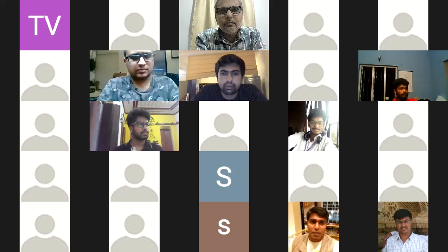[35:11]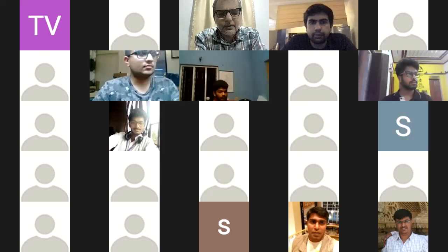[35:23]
Nevertheless, I have two moisture captures in my Oxikit. One is the hydrant one, and second, at this point I was able to source only a 5 micron one. I was not able to source 1 micron, but he's saying that if you want all the moisture removed, just source 1 micron. Ask Janatics, and they will provide you with one. That looks very promising. Thanks for that update. Let's see if we can get that and try it out.
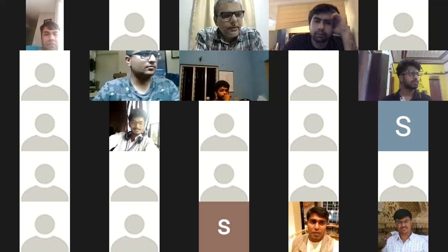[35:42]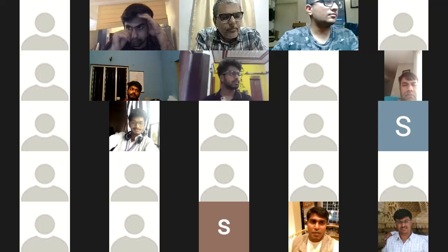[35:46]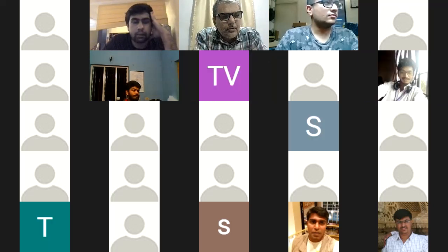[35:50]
Because that is really going to be our biggest problem: moisture. Once we tackle moisture, I think the rest of the engineering is fairly known in terms of our ability to control the parameters. So I guess the moisture problem is just faced by you. I'm not getting even small droplets. It's raining outside in Rajkot, but still there is no moisture coming out in the air. I also have a simple humidity sensor, but I'm not getting any water droplets.
What's your ambient humidity shown on the indicator? 43. So in coastal areas like Goa or Chennai, it will be about 75. We people here in Delhi also aren't facing this problem. Yeah, exactly, Delhi will be around 40 as well. So that's pretty awesome. We have a different problem really.
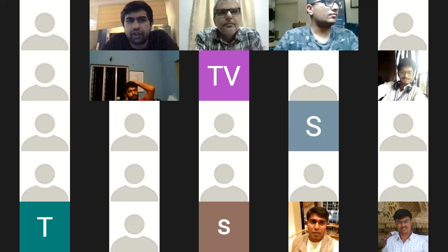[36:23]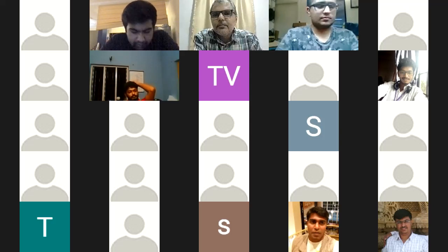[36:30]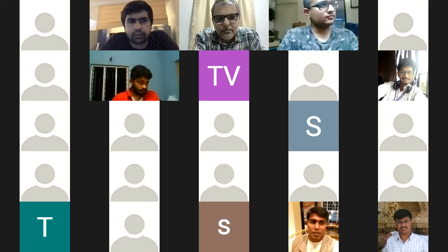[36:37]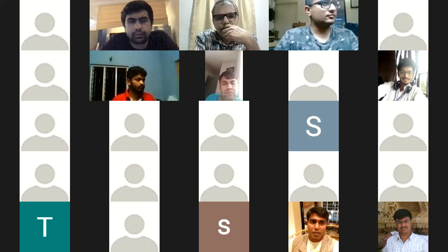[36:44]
But what are you getting after the moisture separators? What's the humidity level after the moisture separators? I don't have an inline humidity sensor, so I'm sourcing that. Then I can give you the perfect results of what is there after the two. I guess Gorba has built one, and I've tried to source those parts through a local channel. I will be getting it in maybe one day or Tuesday, and then I can try out what moisture level is being removed by the 2 stages of moisture trap.
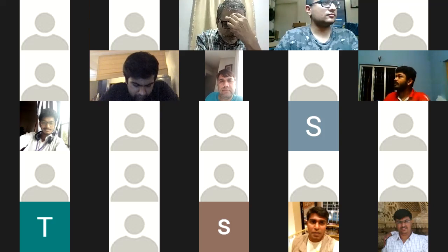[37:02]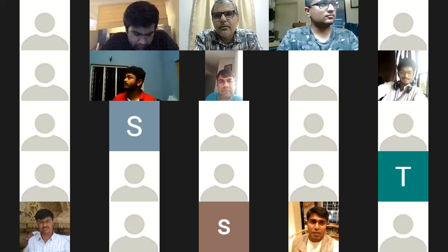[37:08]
What kind of moisture sensor do you have? Is it something that you can insert in a pipe or a tube or a tee? No, it cannot be. It is a huge one. It is a simple one, which I don't remember the name. It's a red color from Robo. I had ordered it a long time back, and it was just lying around, and I tried it.
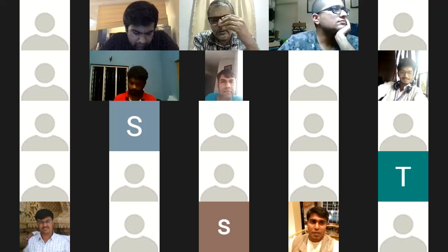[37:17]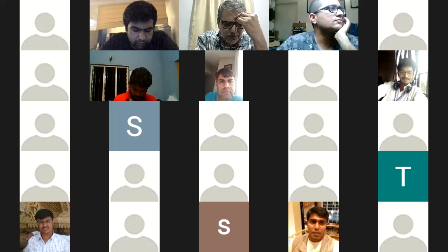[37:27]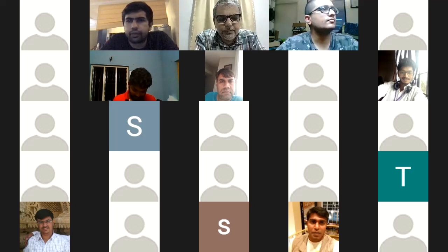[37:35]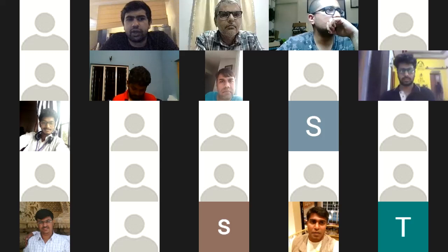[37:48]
Okay, because one of the tips I think we can try is to measure the amount of humidity going inside the sieve. We can measure what's coming out during the purge cycle from the valve. Once I have the sensor, I can try that out. Yeah, that would be a good place to figure out what's actually reaching the sieve. Yes, because even 40% should be bad, right? Yeah, 40% going into the sieves will clog the zeolites, will ruin the zeolite batch, right?
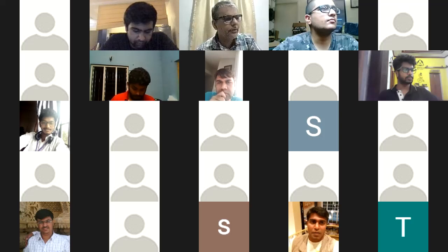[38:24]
Yeah, from what we heard from Oxikit, they have told us that they actually use some of this zeolite in the sieve as a sacrificial moisture layer, for example. So the system is designed such that it will work when some of the zeolite in the sieve is, let's say, saturated with moisture. I don't have any numbers or data to back it up. This is what they told us, so I'm not sure.
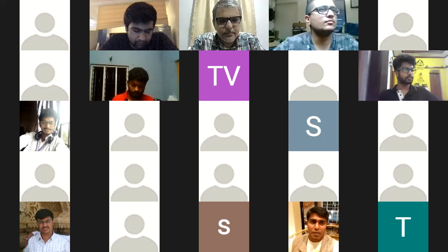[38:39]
Yeah, so I didn't see the weather data. It is showing 55 in my area. I was getting 43 and 44 in a room. So I guess it was not so humid inside, but outside it is 55 at this point. And I was not getting any water droplets as well. Yeah, 55 is still pretty dry. Yeah, compared to 75, 80 that we are seeing here.
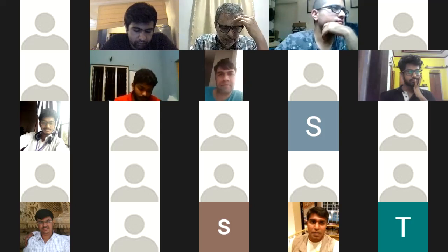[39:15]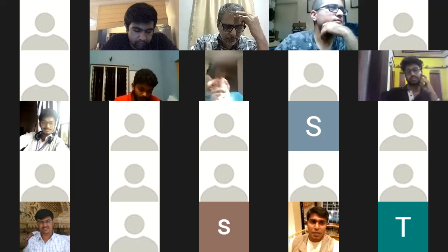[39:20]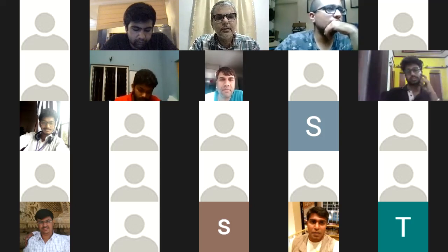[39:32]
So, yeah, I'm a little surprised because Houston is coastal, and I would imagine they would have more than 40% humidity there as well. So if they are not using treatment in between, then I don't know how. But that would be interesting to find out. But from what I've seen in the videos and other things we've been looking at, all of it has been inside some kind of industrial shed or maybe in someone's house. Those pretty much have some form of HVAC control. So it is likely that inside they really have much better conditions than what we have. Over here we don't have buildings and places that are centrally HVAC controlled.
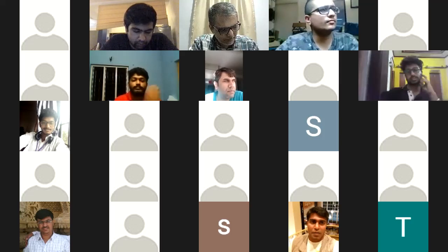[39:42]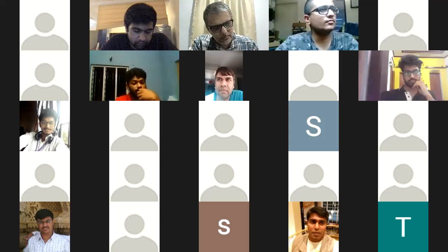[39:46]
And one more thing I would like to add, someone from the IIT Delhi industrial wing told me that whenever you are pouring the zeolite, that should be under an AC. Makes sense. Yeah, of course, that should be in an AC room. Yeah, prevent as much moisture from sticking to it as possible. That's a good tip. A bit of different knowledge, because I had been told if you have a provision, go in a vacuum chamber. Oh, wow. So people give a lot of opinions. No, I mean, both work. If you take it inside a controlled room where the humidity has already been reduced, I think that helps. If you put it in vacuum, even better, because you have 0.
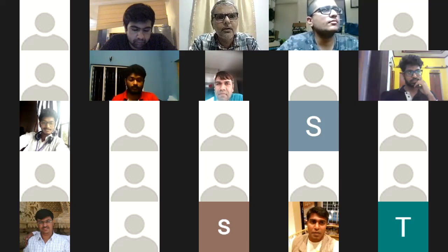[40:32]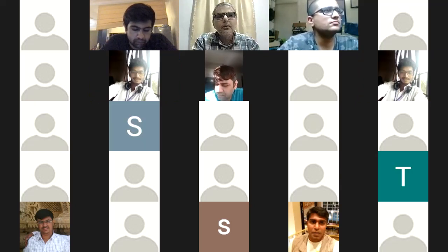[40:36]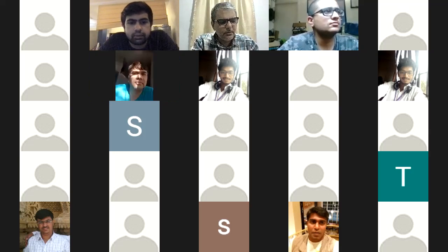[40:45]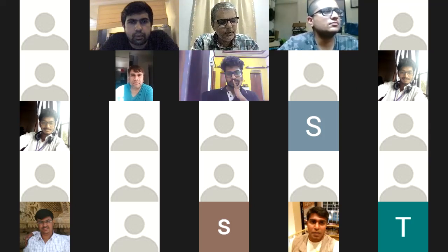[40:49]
Regarding moisture, when I was particularly observing the output of the compressor, it was too hot. The output of the compressor could be around 50-60 degrees in the airflow. That's pretty expected, because a compressor is bound to get pretty hot. So what I did is I selected a pressure regulator which has the gauge and the filter cup. I'm very much in line with Priyank. At the moment, I don't see the real need, because I also got an opportunity to see the back cover of one of the old scrapped concentrators. And therein I did not find even a cooling coil.
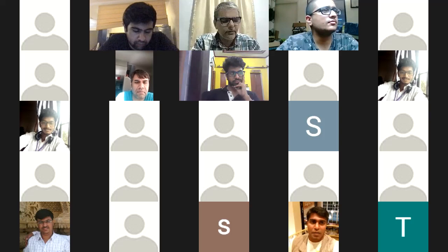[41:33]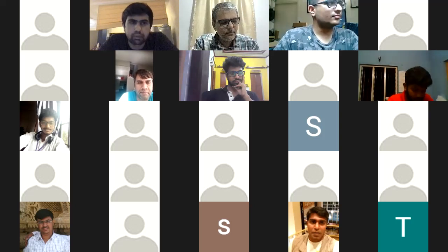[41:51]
But that's the recreational one, right? Something that is 5 LPM, a bench unit. Yes, it was for 5 LPM. Yeah, but the challenges in those are different. There's less pressure, less volume, less of everything. It's overall a much smaller system, so likely our problems don't affect that kind of a system. Actually, adding to Anul's point of view, I think all industrial PSA units have a desiccant bed, like a 20% bed. Yeah, because that's what will elongate the life of the zeolites and their efficiency.
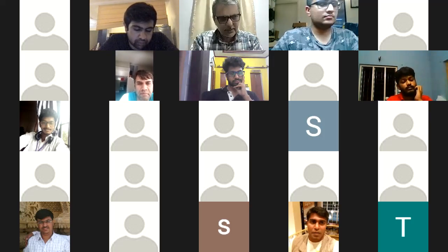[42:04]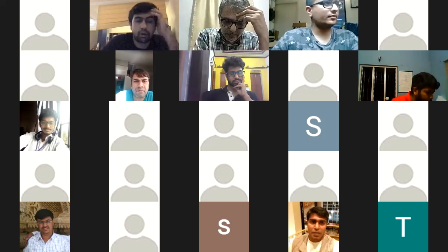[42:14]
So, that is very important. I'm glad you noted the desiccant thing. Yeah, go ahead, Gaurav. So I don't know who's speaking right now, but the thing is, they have a chiller, and the desiccant is the last stage, just to make sure it's extra good. I mean, basically, it removes all the moisture. So they also have a chiller.
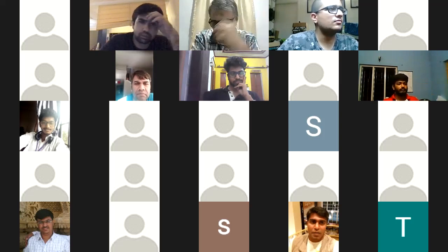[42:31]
In fact, I went to a hospital today, and they actually had an oxygen concentrator outside their hospital, and there was a big condenser on the side of the oxygen machine they had, at least 8 foot by 8 foot. So it was a big machine. They had it on the side. So I mean, chiller is also part of it.
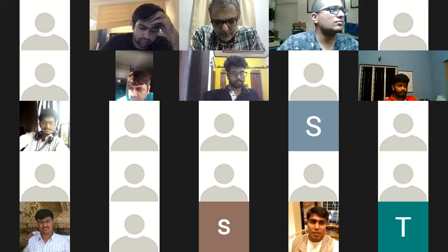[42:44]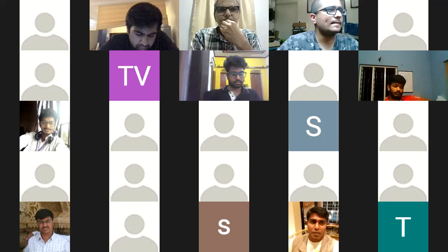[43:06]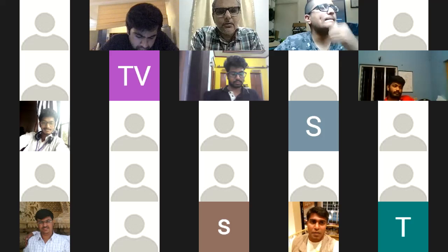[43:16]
So whoever is saying that they're not seeing any moisture, that means you're not cooling it enough. Even at 40%, if you're cooling it enough, you should see at least a droplet coming out. Make sure you have a transparent pipe. That also helps to see what is coming out after the condenser or cooling coil. If you don't have a transparent pipe, please add it. Make sure the temperature is low. You will see water. Yeah, that's important, because at 40% humidity, you have to cool the air quite a bit before you can see it form into drops. So that's a good point.
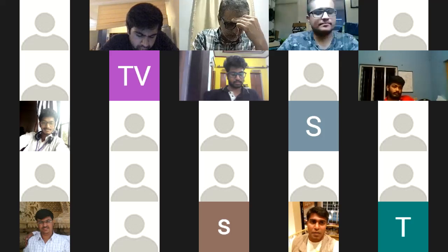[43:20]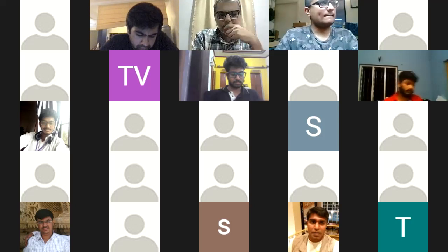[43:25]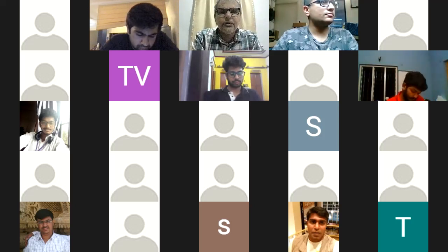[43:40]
Also regarding the desiccant bed. But before I go to the desiccant bed, another thing. The bigger units have heat exchangers. So if we have someone who can reach out to companies that make heat exchangers and get us some insight on whether it's possible to make a small one using something like a radiator and cooling fluid, we should try and explore that possibility, regardless of whether we'll actually put it in the final design or not, just to see if the problem can be solved.
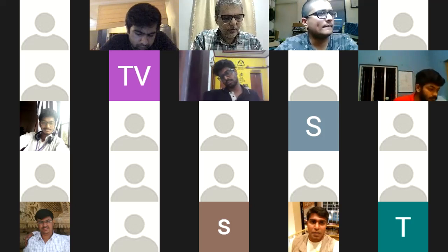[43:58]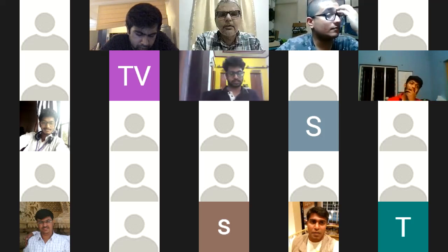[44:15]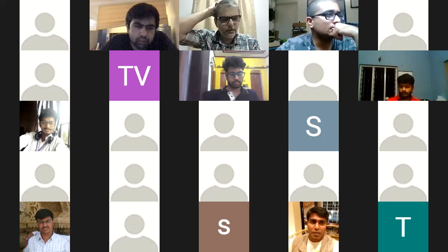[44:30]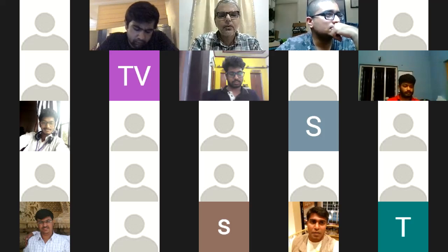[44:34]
So Anul, that's exactly what I did. I got a condenser and I put it in a bucket full of water right now. But later on, it's going to be a 40-60 glycol, as you suggested. Yes. But right now, the water thing works without the fan. It's a single row condenser dipped in a bucket full of water, and I think it's doing its job. So it's working the other way around. Your air is passing through the coils, and your condenser is totally dunked in glycol or water. Water right now, but I think I can add glycol. Yeah, glycol is better, because cooling fluid is not supposed to freeze, and it has a very high heat transfer coefficient. So compared to water, that will be much better.
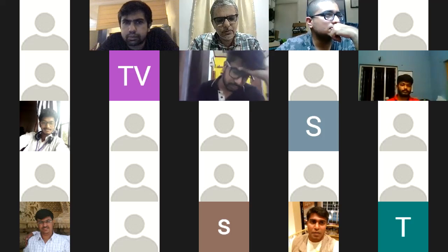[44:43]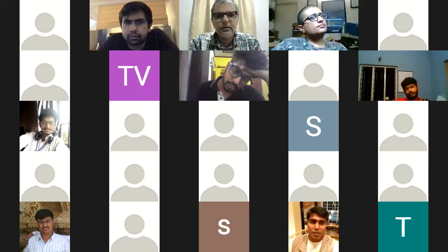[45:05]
Also coming back to desiccant, there have been a couple of things that we've been thinking of. One good way to do this would be to have regenerative silica gel put either just before the air enters the sieve or just after it leaves the cooling coil, one of the two places. And regenerative silica gel essentially is color changing. So it's blue when it's dry, but it turns pink when it becomes saturated with moisture.
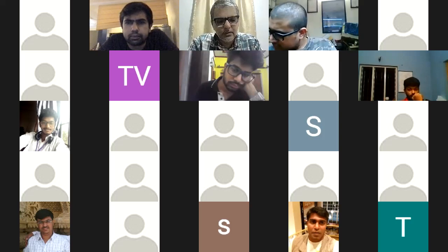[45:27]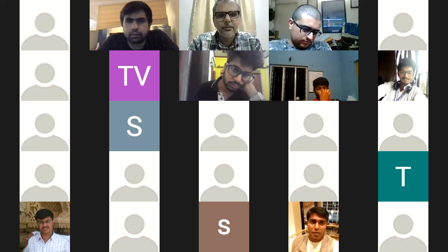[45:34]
The trouble is that you have to probably swap or change it at regular intervals. How often, I really don't have any numbers unless someone tries it out. So let's say you have to change a can of silica gel once a day, is that acceptable to the end user? Or do we have to do it once a week? Is that acceptable? These are things we may have to ask and find out, because that's a solution, but we have to know if the end user is willing to do that.
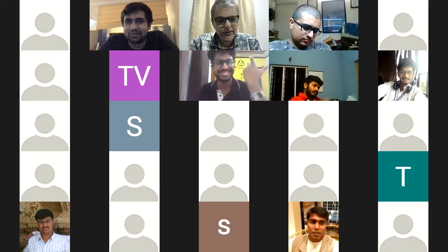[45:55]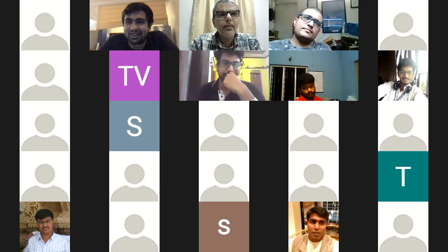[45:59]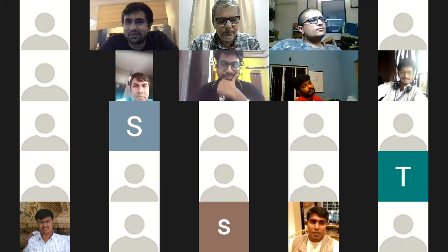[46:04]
Can we move our discussion to zeolite and other areas also? Sure, the floor is open. We can discuss anything under the sun as long as it's Oxikit and oxygen generation. All right. So talking about zeolites, one thing that is also important is that the zeolite should also absorb the CO2 that is coming out.
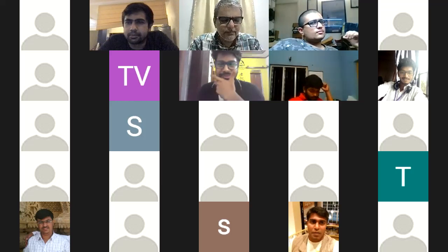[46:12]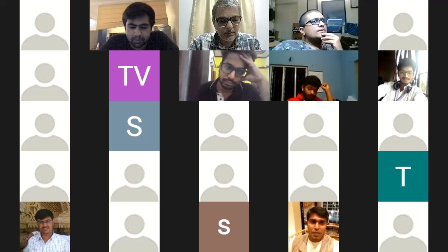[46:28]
Well, yes and no. We've been thinking about this a lot. The amount of CO2 in normal air isn't really a lot, and most of the designs that I've seen really don't bother too much about that. But if the zeolite can absorb CO2, that's awesome. That'll be wonderful. But if doing that adds too much to the cost, or we need some really special zeolite, I think...
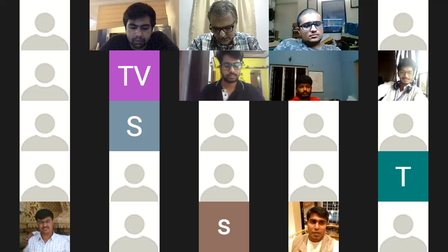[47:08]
No, that does not add to the cost, because this guy in Chennai, from Astral Chemicals, who has a factory out there, was telling me that his zeolites have the ability, and he's charging a decent 325 per kg. He's claiming that his zeolites can absorb the CO2 as well, and you don't need to add on any other thing to absorb this. I don't know. Maybe I think it's a good point. Maybe we should ask the doctors or the experts on whether this is a problem or not.
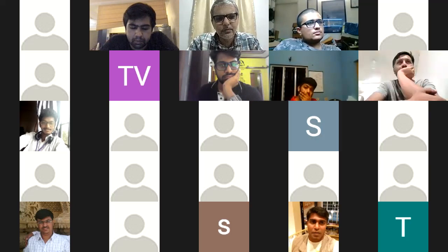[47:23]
The way I see it, it is not. For example, in scuba diving, the rebreathers actually do a trick like this, where they recirculate some of the air that you're exhaling back in, so that your body thinks that it's getting normal air. So it's kind of a mental trick to make your oxygen tank last longer. If anyone's interested, look up rebreathers. They're pretty interesting devices. Do we have any insight on the rebreather? You've done some scuba stuff, right?
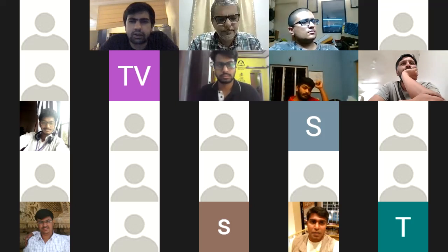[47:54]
Yes. Just ask me that question once again. I'm sorry, what's a rebreather in scuba diving? Well, what's happening over there is that you're basically pulling in air, and there is a two-cycle process to it. As you're sucking in air from the tank, it is like a one-way valve that's not allowing any other air to enter, and then pushing it out from the front. I can do a little bit more research on exactly how it works and share.
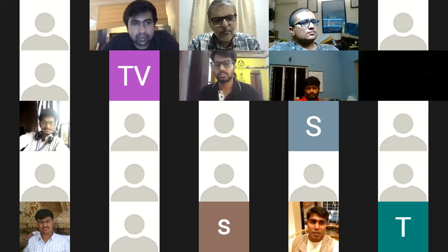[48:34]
So my point was that in order to increase the efficiency, the CO2 would also add up in the purity level, if you would. If someone's got a browser open, just check how much CO2 percentage is there in air, and we'll know how much we are breathing. I don't think it's going to be a big issue really. But Abhimanyu, if you can find some more data to tell us that yes, it's a good idea, let's do it. Why not?
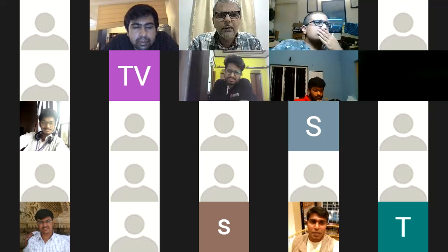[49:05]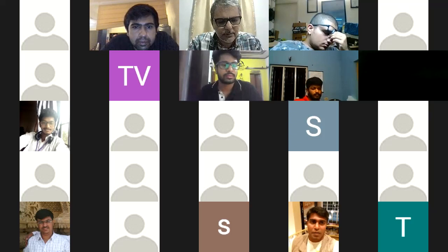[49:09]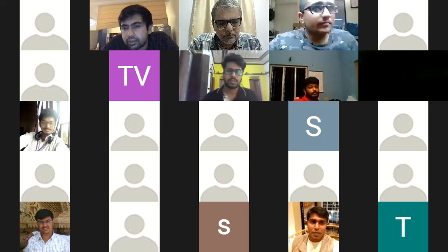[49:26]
Also, the way we have seen the pricing, I'm not sure what to believe and what not to believe. We've seen prices ranging from 300 to 3,000 to 5,000 in terms of per kg zeolite cost. I'm sure there are good reasons why each is priced at what it is. There is some kind of a price-performance trade-off with it, so we'll have to be careful that we don't buy the low-end stuff and end up with problems.
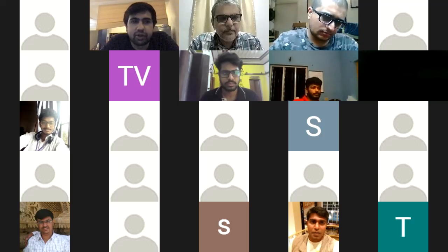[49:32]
So in the rebreather, one thing that's happening is that the exhaled air from your lungs is going back in by mixing in a little bit of fresh oxygen. Instead of just throwing away the air completely outside, the air that you throw away from your mouth gets mixed and replenished with oxygen and then comes back into your mouth again.
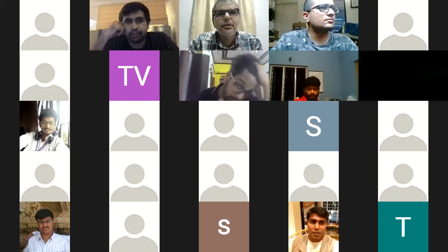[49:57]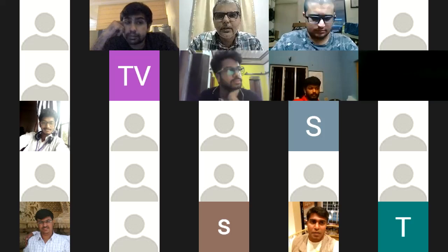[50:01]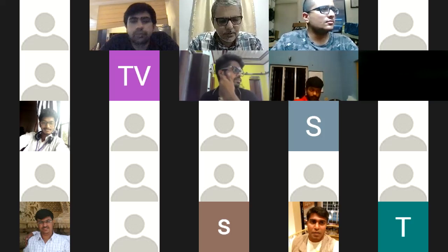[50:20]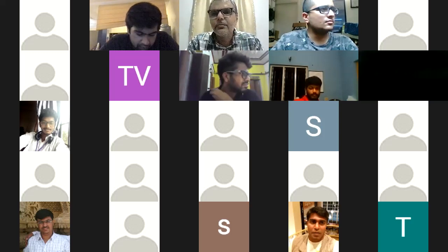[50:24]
The air that you're breathing out is mostly carbon dioxide. So the oxygen goes in and you breathe out carbon dioxide. But as long as the body thinks that it's getting its lungs filled, it doesn't matter what the gas is. Your mind doesn't freak out and goes ahead thinking, well, I'm getting good air, so I'm good to go. This way you can actually extend the life of a scuba tank from like 3 hours to 8 hours or something like that. So I don't think breathing in carbon dioxide is a big issue, really.
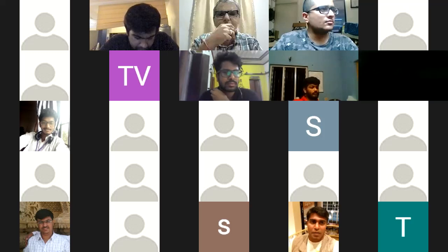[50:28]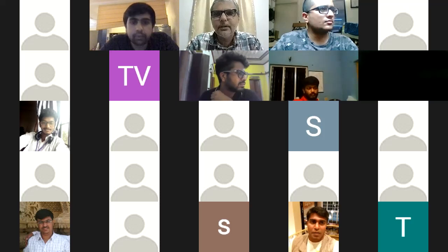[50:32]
All right. The reason I'm stressing on this is, like I said, being the kind of folks we are, we love to add what is known as feature creep. I mean, keep improving things. But at this point, we should look at the MVP, the minimum viable product feature list that we want.
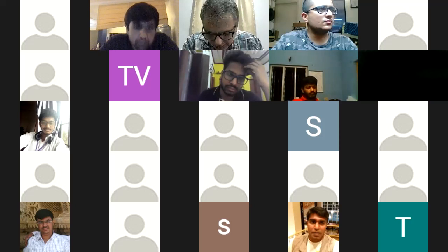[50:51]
All right. So one last question from my side. I won't be troubling you guys. No, but Abhimanyu, sorry to cut you off again, but please do get back to us on whatever you find regarding this. This sounds interesting.
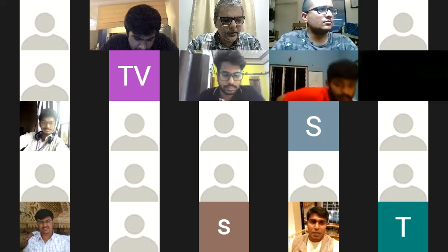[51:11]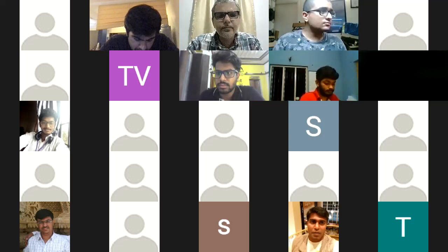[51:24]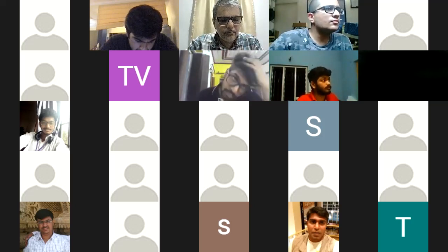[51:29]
All right. So changing to another dimension. Are there any people out there who are in the advanced stages and are working out the timing cycle on their own using the physics and all that? We haven't reached that stage yet. I think Krishna from Diverse also has the wrong zeolite. Not sure. Gorbachev, have you reached a stage where you can tune the cycle? I would really want someone so that I can discuss all the knowledge that I have received right now, all the experiments that I've done, so that I need someone to...
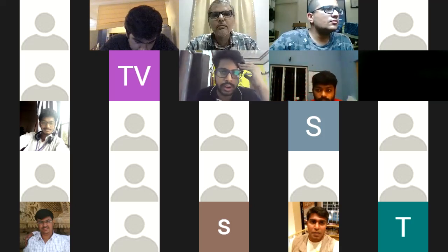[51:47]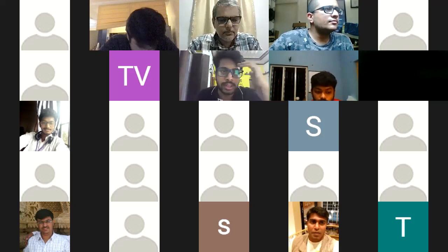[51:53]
Hey, Abhimanyu, what I could do for you is, I'm dealing with some researchers from BHEL and ISC who are experts in zeolite, and they've been talking to me about timing cycles. So if you're at advanced stages in your design and already in the timing cycles phase, I can put you in touch with them. They're talking about dependent variables and independent variables. This is what you change. This is what you control. I need all that. Please.
Yeah, so I will put you in touch. Where are you based? Gurgaon, Delhi NCR. Okay, so I'll just give you his number. Again, he's a very senior person.
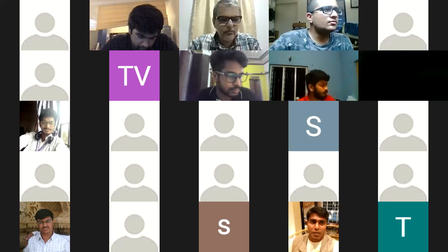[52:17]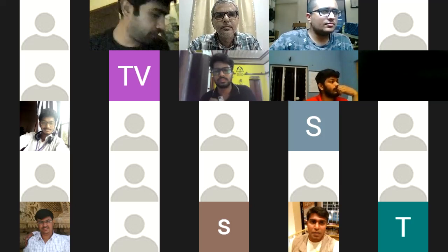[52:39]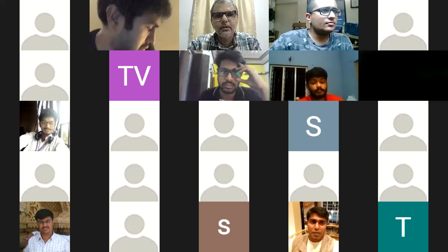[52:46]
So Abhimanyu, I'm really sorry to interrupt this conversation right now. I think Gorbachev is having trouble with his connection, but let's wait and see if we can get that sorted. All right, we'll probably ask him to put his views on text chat or something later if we don't get him up again.
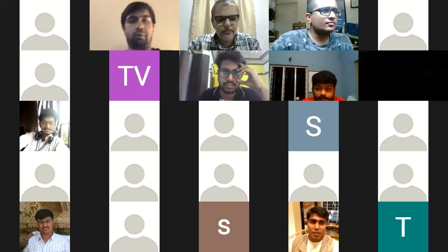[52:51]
Can you show my screen out here? What I have done or what I'm looking for? Or do you want that afterwards? Sorry, you can share, Abhimanyu. You can count on me as well, because I'm trying different cycles on my setup now. All right. So do we need to do that right now?
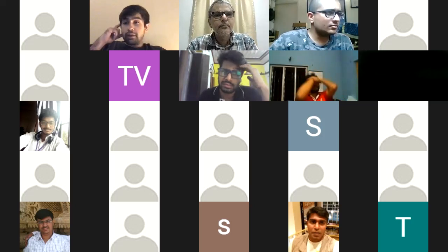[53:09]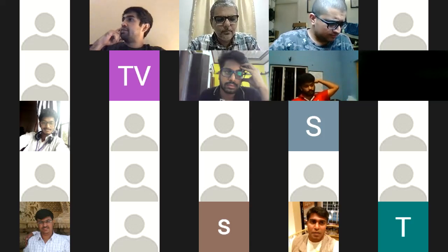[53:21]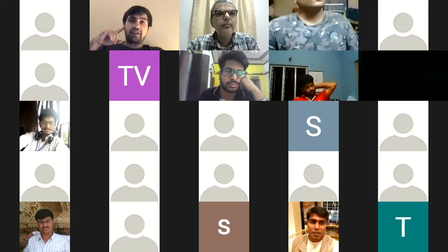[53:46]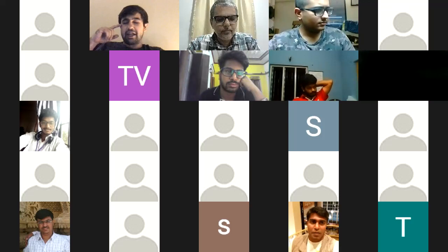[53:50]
So just on the timing cycle, I just wanted to speak on behalf of Anirudh Sharma. What he's building is a rotary valve system. Unfortunately, members have fallen sick and are now COVID positive, so he's possibly sending the system tomorrow to Goa. We will find out more tonight once we convene on that. He's not using the solenoid system, but one rotary system which reduces a lot of parts. However, it is slightly more complex to build and get right at first. But he thinks it's very straightforward, and he's figured out a simulation that allows you to easily create those valves online to figure out the timing, and that would be very helpful. He's in Jaipur, I guess. Yes, in Jaipur.
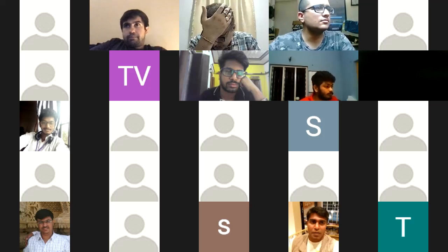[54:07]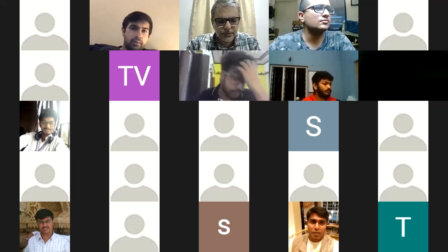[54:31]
Okay, so we reached the 1 hour mark. I think we should probably stop, otherwise we could go on discussing the whole night, being the kind of folks we are. But if everyone's okay, we should have this on a more recurring basis. I am proposing 2 calls a week to discuss just engineering stuff. Is everyone okay with that? And we can set up the next call in the next couple of days where everyone will have more updates and inputs.
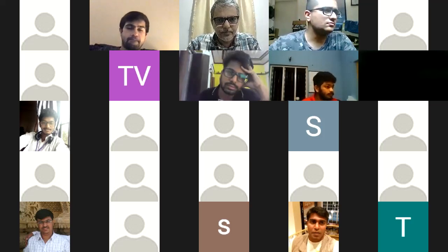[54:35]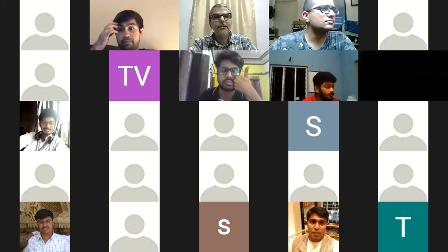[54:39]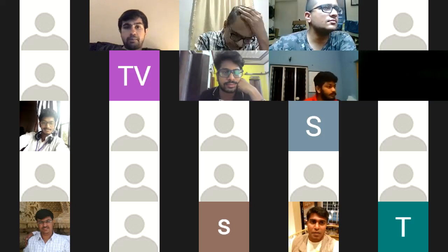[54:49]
All right, I call that a yes. I see Vijay, the thumbs up. So great. Where are we? We are on Tuesday. Maybe Friday might be a good day to have another review before the weekend sets in.
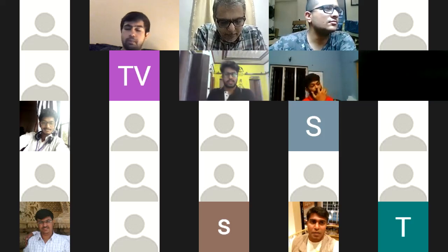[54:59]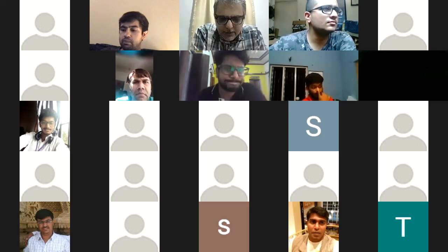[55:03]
Hey, can I? Yep. I just got to know about this group and I'm really excited. I'm an individual, and I was planning to make this oxygen concentrator at home. Is it possible? Where are you based? Gujarat, Bharuch. Baroda is close enough, but with the current conditions, you may or may not be able to travel.
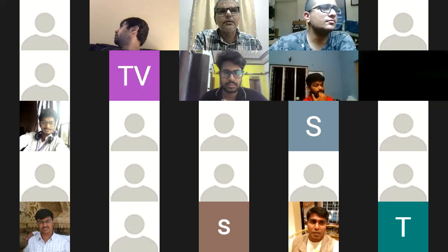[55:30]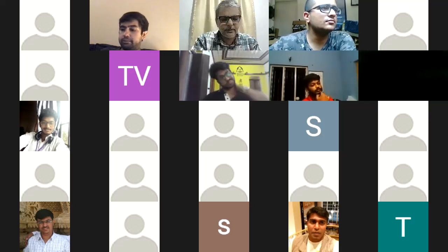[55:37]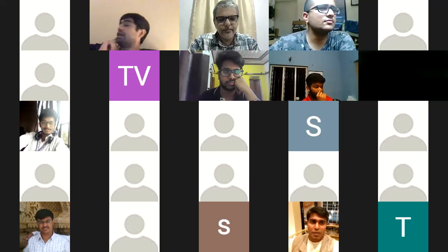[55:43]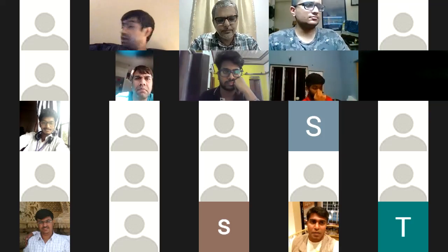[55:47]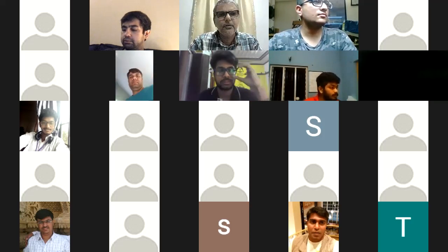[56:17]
But sync up with them and see how they can help you locally in terms of the best way to get parts and any local issues. Weber, what are the ways that people can interact with each other? Yes, there is a group for Gujarat M19 Oxikit. So I just joined it. Yeah, that's the best. Each state has its own group so that it's easier for people to communicate locally. Richa, Bhanu, Abhi and everyone are working on this, so within a day, everyone should get an update on how to join local teams and local chapters so you can contribute. Also, feel free to check out the Telegram, especially the pinned messages, which will mostly have all of the links that you may need to join the groups.
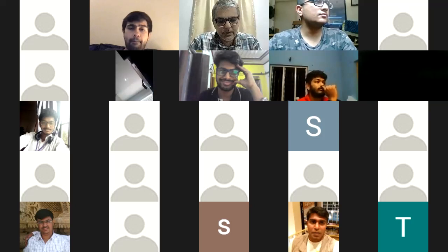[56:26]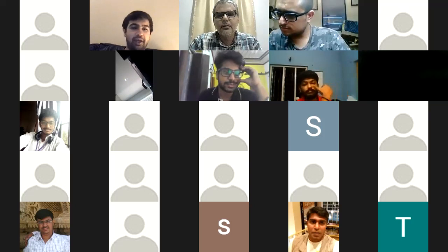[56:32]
All right, I can smell food here, and my tummy is growling. So it's 9 o'clock. Should we call it at 9, Weber? Yes, I think that's a great call.
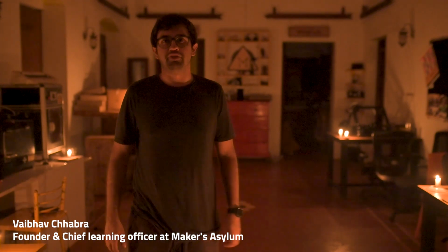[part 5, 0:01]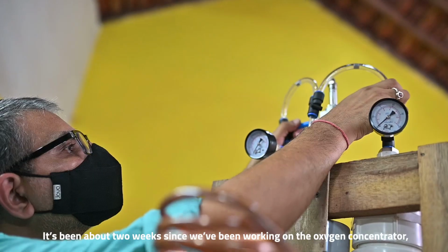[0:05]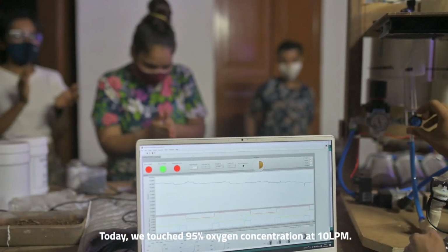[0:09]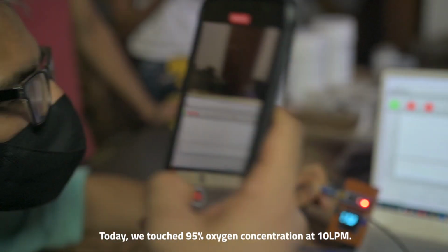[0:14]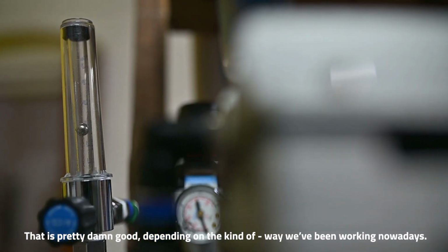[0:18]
It's been about 2 weeks since we've been working on the oxygen concentrator, and we've made some really good progress. Today we touched 95% oxygen concentration at 10 LPM. That is pretty dang good, depending on the kind of way we've been working on these.
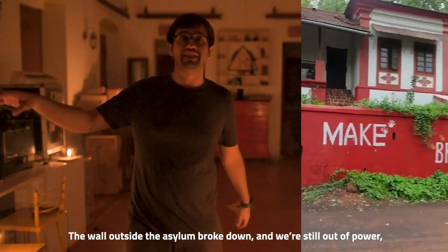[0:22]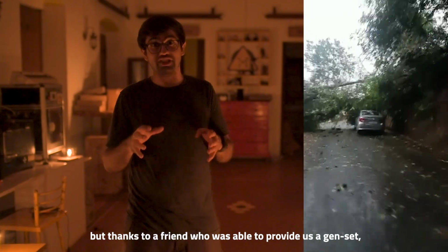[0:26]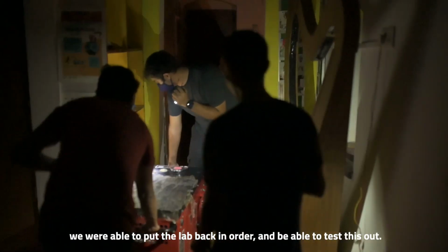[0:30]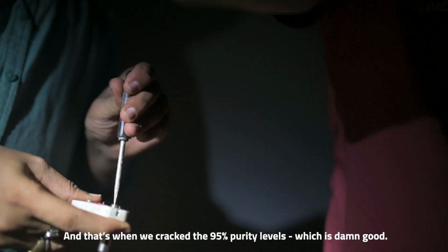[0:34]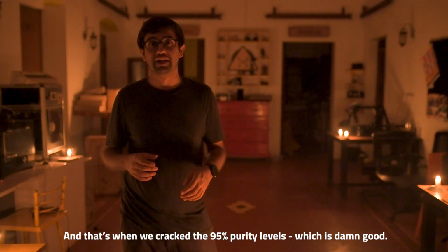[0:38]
The wall outside the asylum broke down and we're still out of power, but thanks to a friend who was able to provide us a genset, we were able to put the lab back in order and be able to test this out. And that's when we cracked the 95% purity levels, which is damn good.
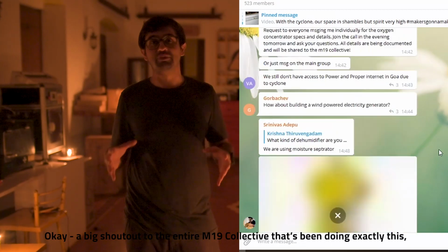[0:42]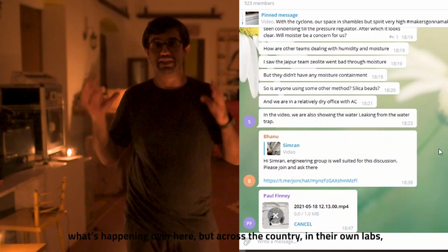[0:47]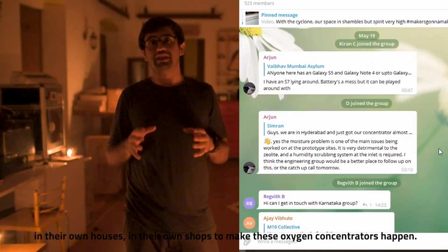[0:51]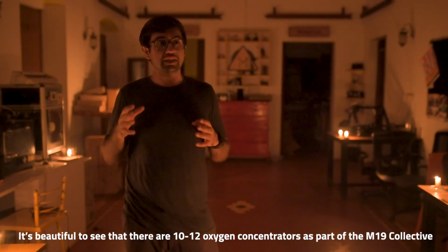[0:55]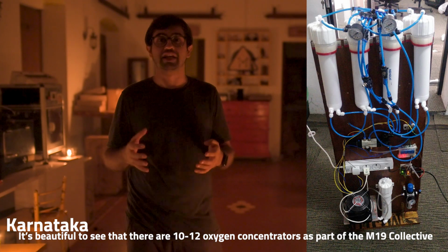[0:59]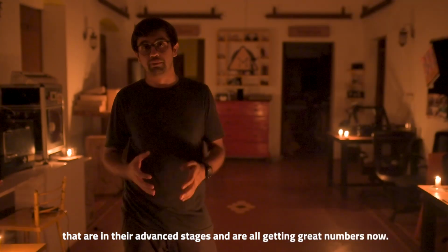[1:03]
A big shout out to the entire M19 collective that's been doing exactly this, what's happening over here, but across the country, in their own labs, in their own houses, in their own shops, to make these oxygen concentrators happen. It's beautiful to see that there are 10 to 12 oxygen concentrators as part of the M19 collective that are in their advanced stages and are all getting great numbers now.
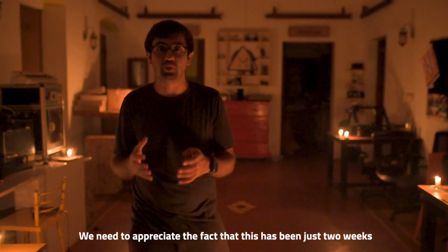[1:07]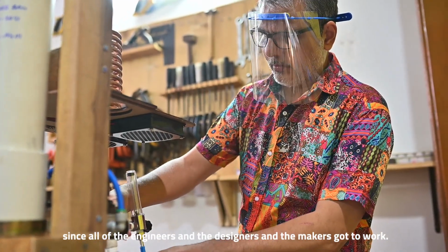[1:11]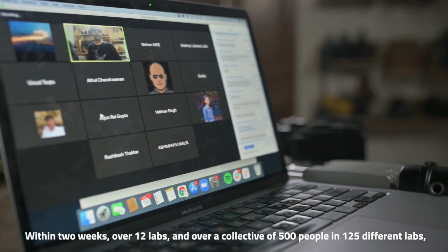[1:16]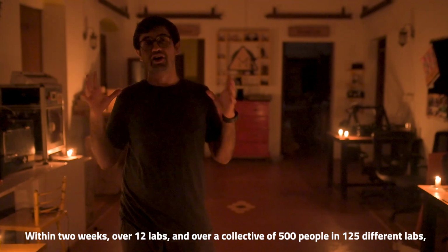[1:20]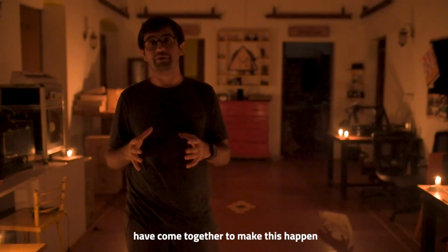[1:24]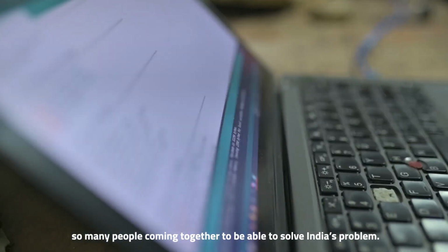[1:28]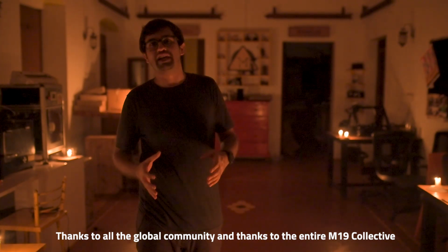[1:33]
We need to appreciate the fact that this has been just 2 weeks since all of the engineers and the designers and the makers got to work. Within 2 weeks, over 12 labs and over a collective of 500 people in 125 different labs have come together to make this happen. And that's what's really beautiful at the end of the day. So many people coming together to be able to solve India's problem. Thanks to all the global community and thanks to the entire M19 collective, together we've made this happen.
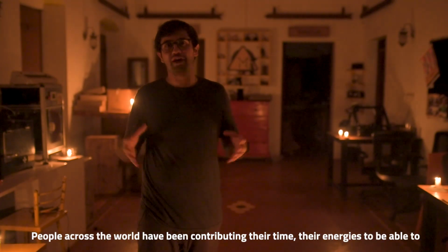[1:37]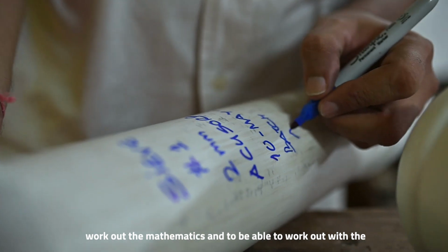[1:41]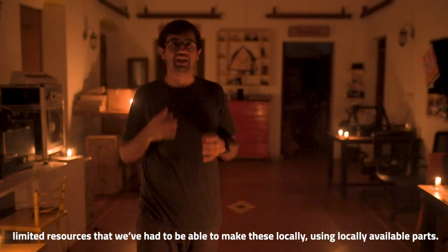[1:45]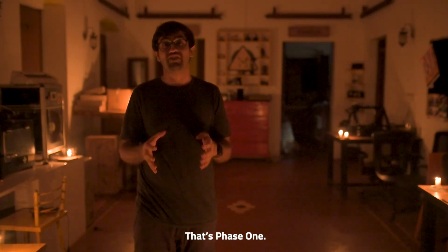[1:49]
People across the world have been contributing their time, their energies to be able to work out the mathematics and to be able to work out with the limited resources that we've had to be able to make these locally, using locally available parts. That's phase one.
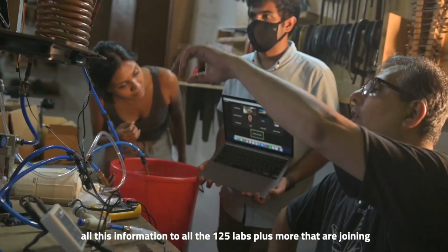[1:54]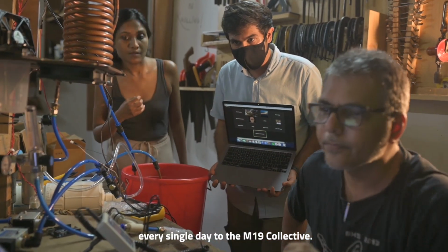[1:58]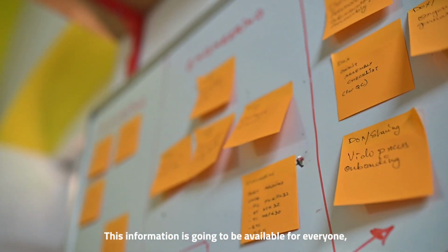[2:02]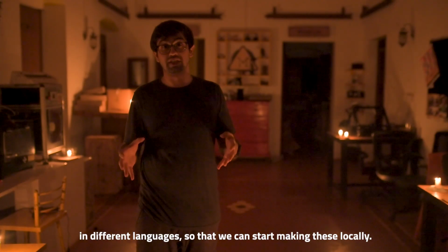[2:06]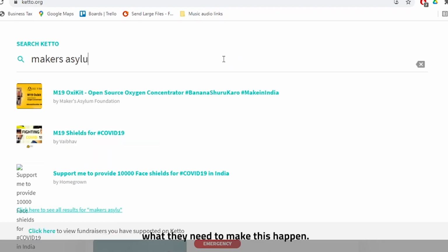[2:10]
Phase two, where we're going to be disseminating all of this information to all the 125 labs plus more that are joining every single day to the M19 collective. This information is going to be available for everyone in different languages so that we can start making these locally. We're trying to raise funds to be able to give them what they need to make this happen.
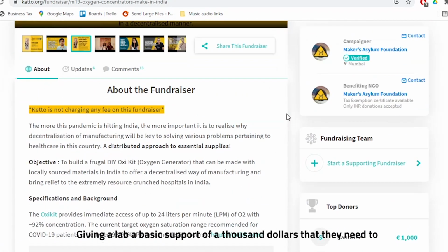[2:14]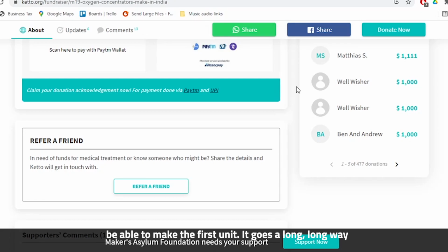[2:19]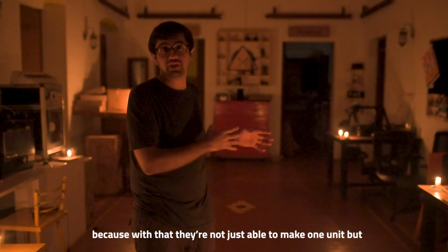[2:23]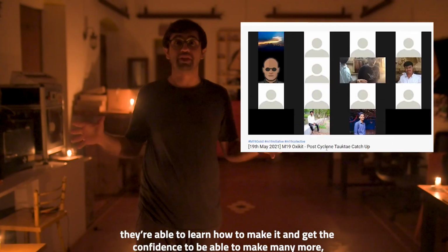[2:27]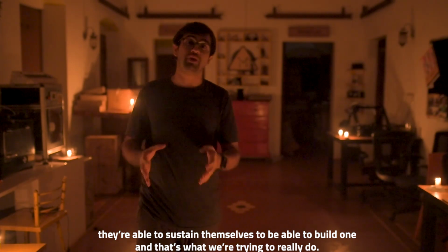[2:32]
Giving a lab a basic support of $1,000 that they need to be able to make the first unit, it goes a long, long way, because with that, they're not just able to make one unit, but they're able to learn how to make it and get the confidence to be able to make many more. They're able to sustain themselves to be able to build one. And that's what we're trying to really do.
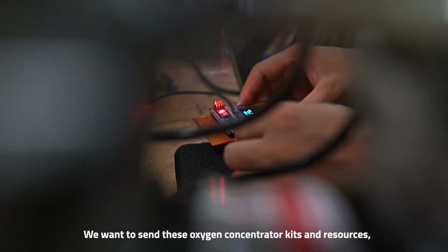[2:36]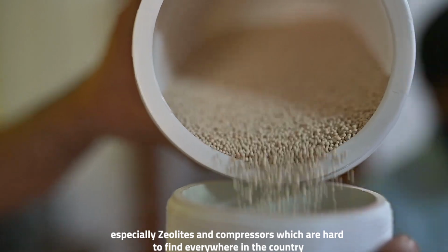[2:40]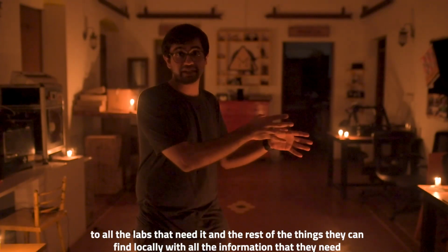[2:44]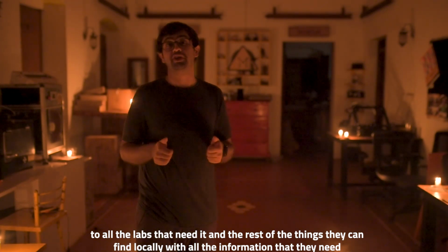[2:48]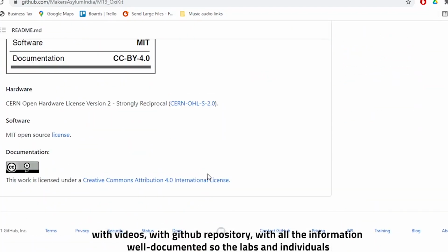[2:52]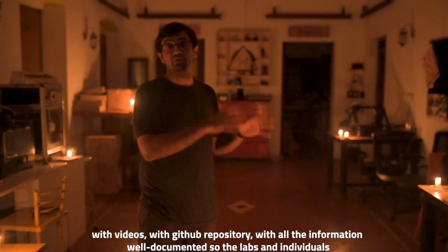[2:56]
We want to send these oxygen concentrator kits and resources, especially zeolites and compressors, which are hard to find everywhere in the country, to all the labs that need it. And the rest is things they can find locally with all the information that they need, with videos, with GitHub repositories, with all the information well documented, so the labs and individuals across the country can start making it themselves.
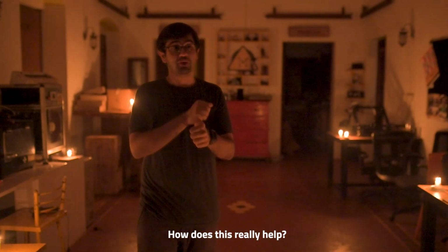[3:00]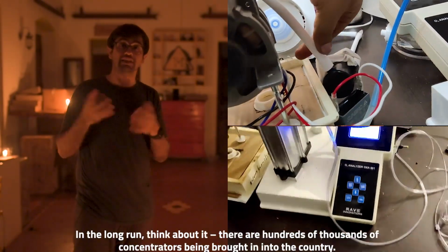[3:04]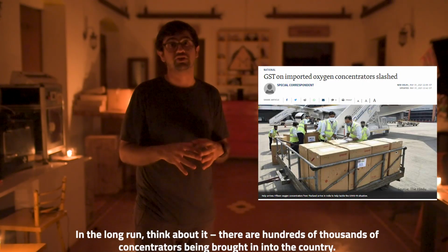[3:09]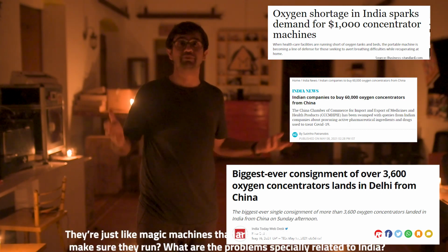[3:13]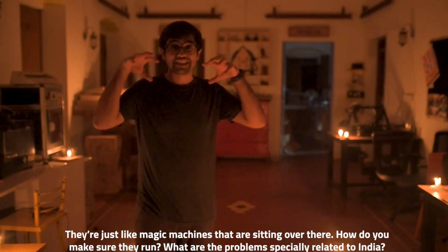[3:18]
How does this really help? One, of course, it helps with the fact that people can make this locally. In the long run, think about it. There are hundreds and thousands of concentrators being brought into the country. What's happening? Who's going to fix them? Who knows how to work these things? They're just like magic machines that are sitting over there. How do you make sure they run? What are the problems, especially related to India, especially humidity?
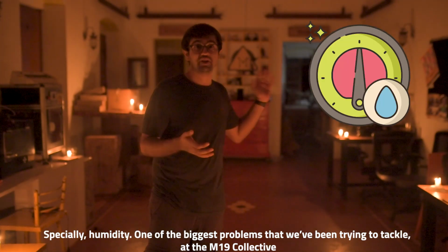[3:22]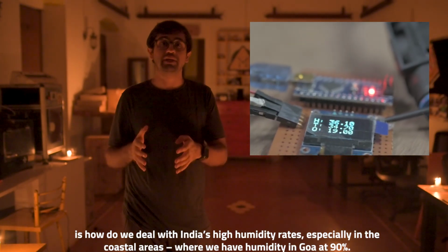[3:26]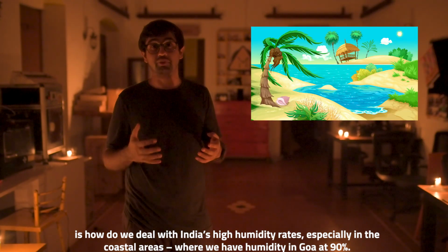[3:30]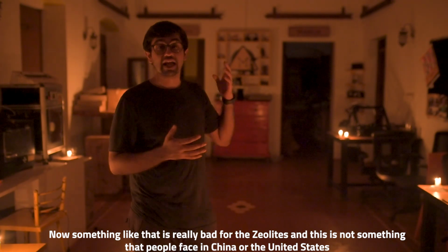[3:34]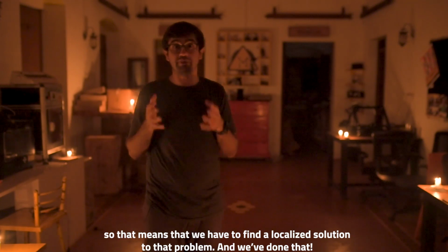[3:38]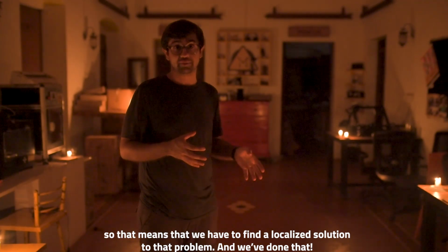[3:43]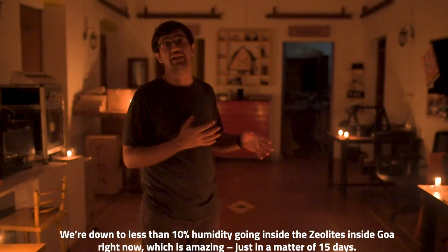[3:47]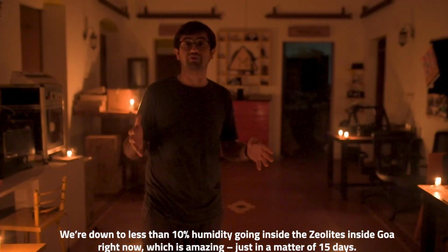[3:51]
One of the biggest problems that we've been trying to tackle at the M19 collective is how do we deal with India's high humidity rates, especially in the coastal areas where we have humidity in Goa at 90%. Now, something like that is really bad for the zeolites. And this is not something that people face in China or the United States. So that means that we have to find a localized solution to that problem. And we've done that. We're down to less than 10% humidity going inside the zeolites inside Goa right now, which is amazing, just in a matter of 15 days.
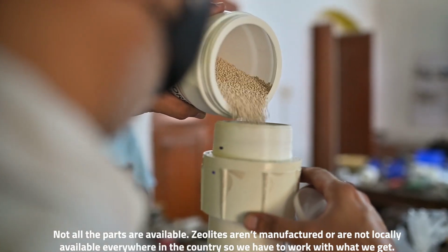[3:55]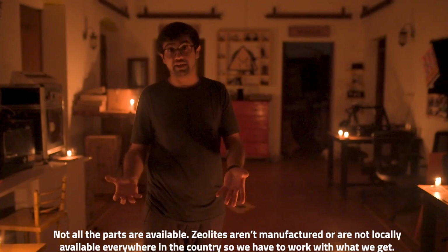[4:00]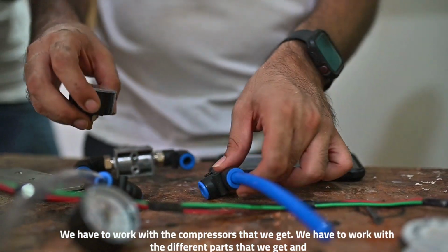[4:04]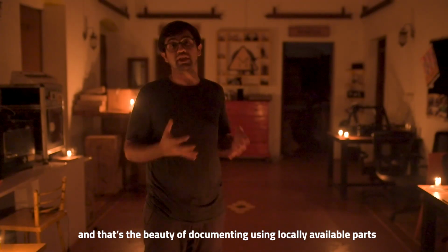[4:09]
Not all the parts are available. Zeolites are not manufactured or are not locally available everywhere in the country. So you have to work through with what we get. We have to work with the compressors that we get. We have to work with the different parts that we get. And that's the beauty of documenting using locally available parts.
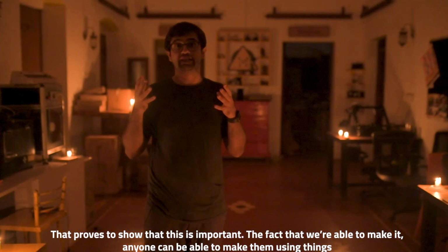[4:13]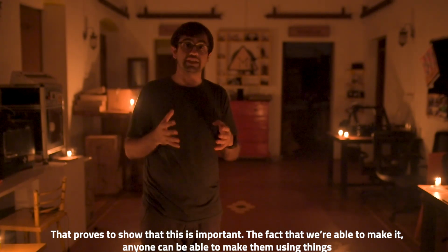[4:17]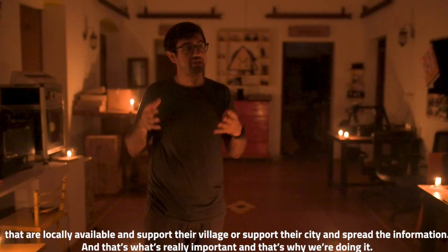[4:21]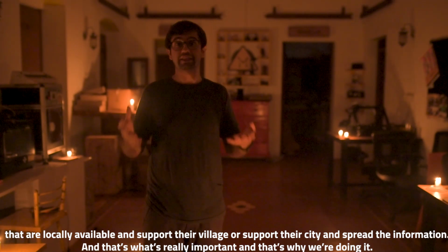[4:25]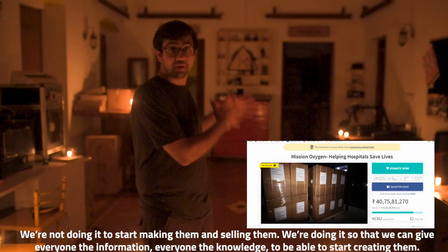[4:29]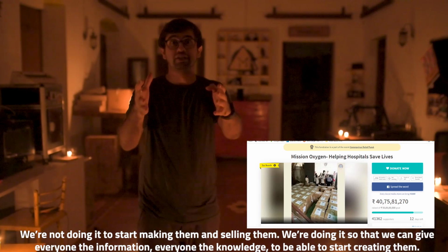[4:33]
That proves to show that this is important, the fact that we are able to make it, anyone can be able to make them using things that are locally available and support their village or support their city and spread the information. And that's what's really important. And that's why we're doing it. We're not doing it to start making them and selling them. We're doing it so that we can give everyone the information, everyone the knowledge to be able to start creating them.
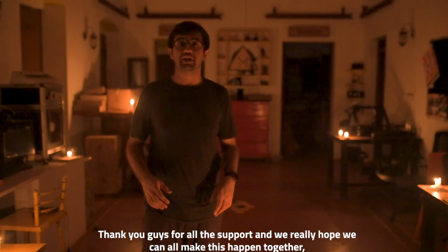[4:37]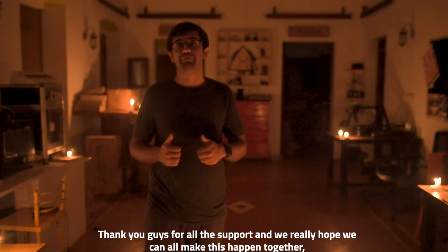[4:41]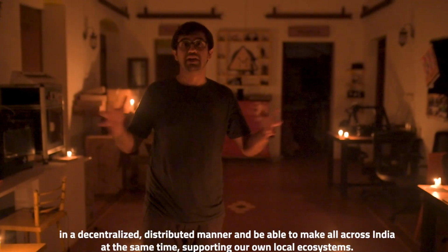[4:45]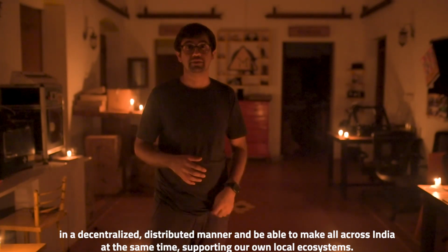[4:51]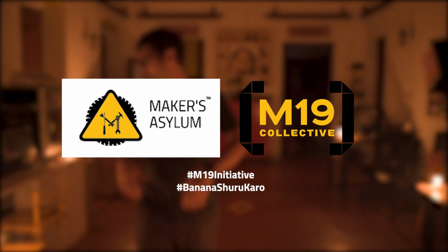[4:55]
Thank you guys for all the support, and we really hope we can all make this happen together in a decentralized, distributed manner and be able to make all across India at the same time, supporting our own local ecosystem. Good enough? Fantastic, man. I love it. But and cut.
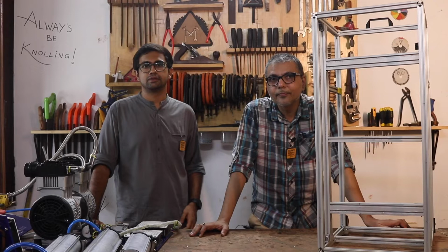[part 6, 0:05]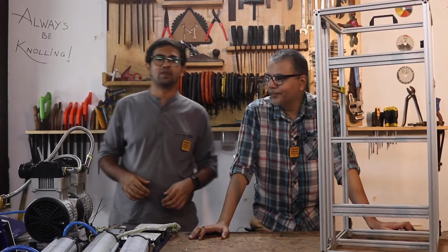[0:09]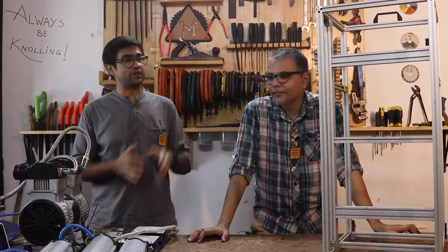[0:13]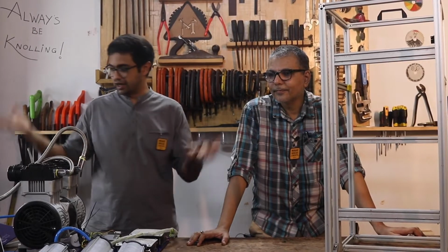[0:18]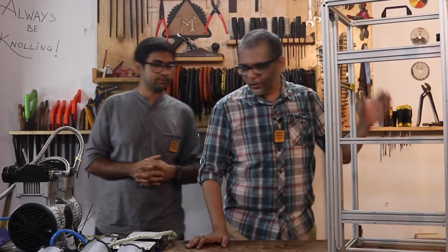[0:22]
Today we're going to be talking about the M19O2 and taking you through the assembly guide of how to assemble and put this together. We're going to walk through the different sub-assemblies and tell you how to put them together.
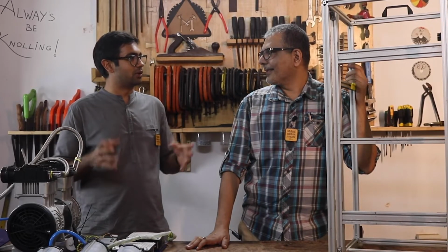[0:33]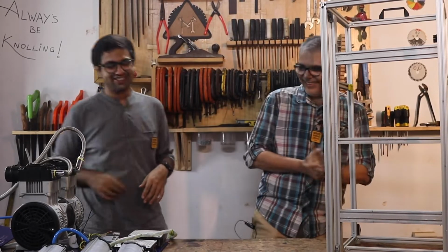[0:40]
Do you know what an oxygen concentrator is? I think so. I think it just gives out oxygen, right? Out of nowhere. Like, how does it create oxygen? Yeah, so that's what we're going to talk about today. Fair enough.
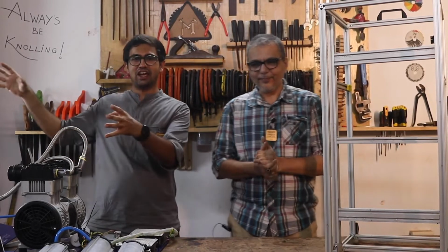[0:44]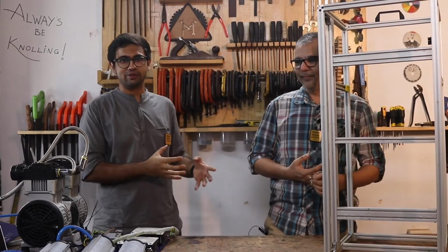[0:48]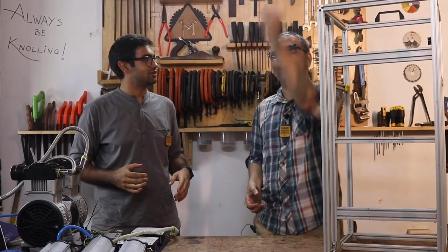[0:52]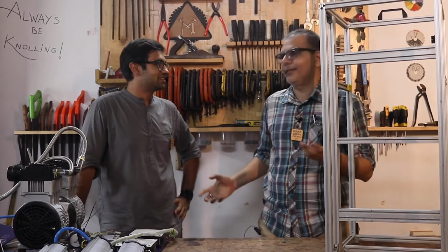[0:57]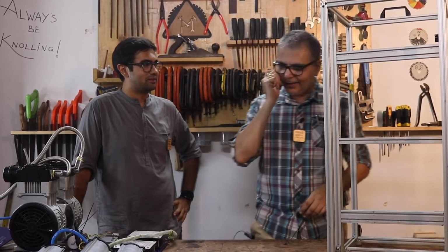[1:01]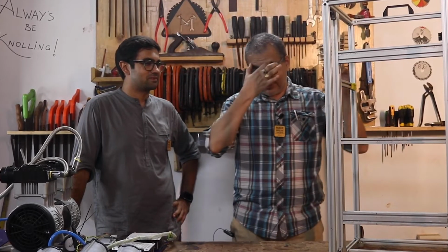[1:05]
So we're going to be taking air from the environment and concentrating it to make 95% pure oxygen. It's not like you can say, okay, here's a fistful of air and I have oxygen. No, that's not how it works. You've got to have a bunch of stuff that pulls oxygen out of thin air. So let's walk through it.
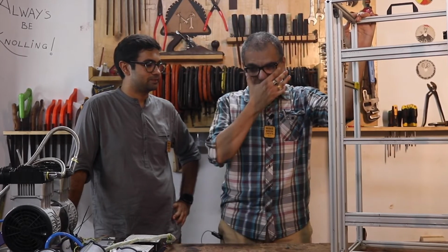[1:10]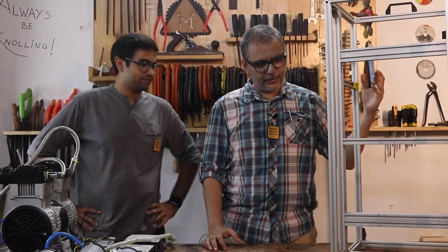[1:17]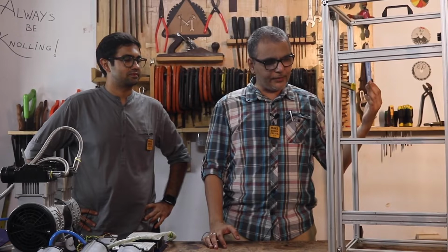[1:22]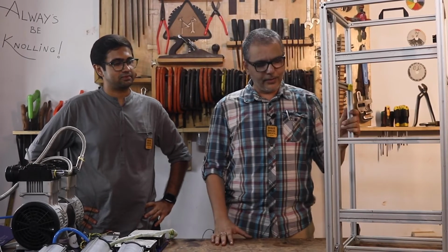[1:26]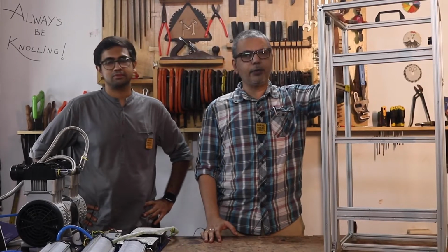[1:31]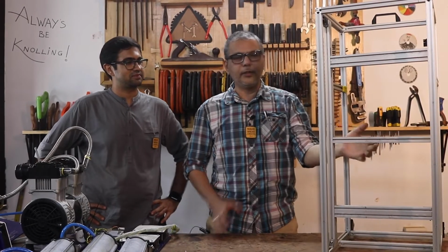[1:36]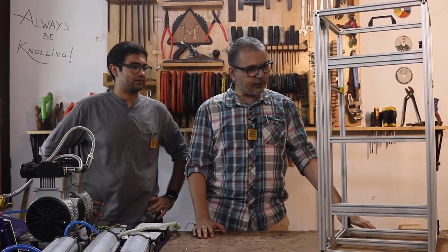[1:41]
All right, folks, here's the first part of the assembly process. We need to start with a frame that's going to hold all the parts together. That's the most important part of the whole assembly, but in some ways also the most non-critical, because you can do this in many different ways. Because we are prototyping and researching here, we have used an aluminum extrusion frame that helps us to move things around and adjust the sizes to fit the parts that we have on hand as we go along.
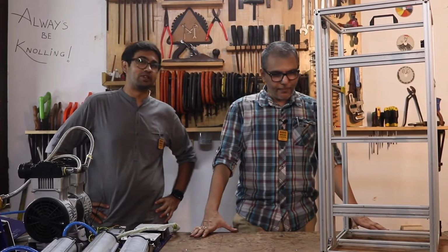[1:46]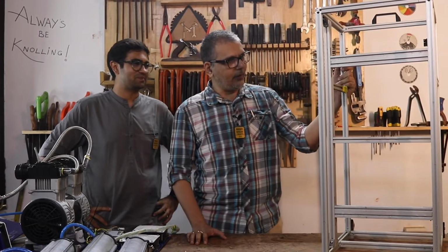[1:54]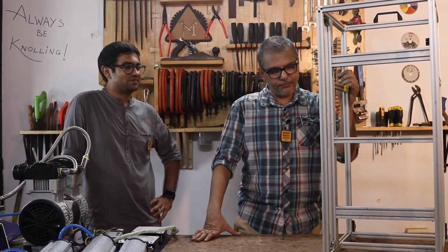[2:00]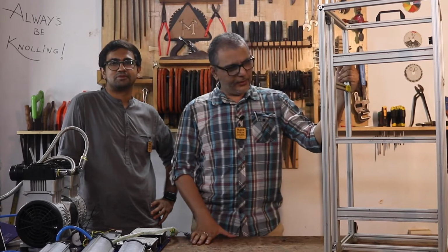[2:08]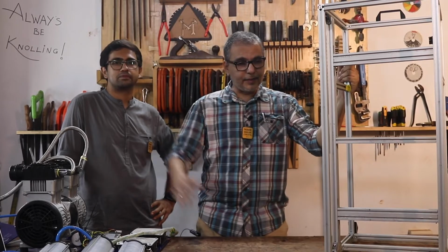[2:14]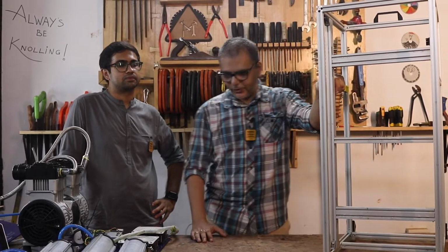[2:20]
It looks easy, but honestly, when you start building it, that's probably where the most amount of time is going to go, getting this right. Getting it all aligned, getting it set up. If you miss something, you have to rip it open and put it back together. So it takes a bit of time. But once you get the hang of it, it's like playing with Meccano sets, so not too difficult. But if you're going in for bigger build sizes or build numbers, then you'd probably want a different kind of enclosure. So I'd say non-critical, but important for sure.
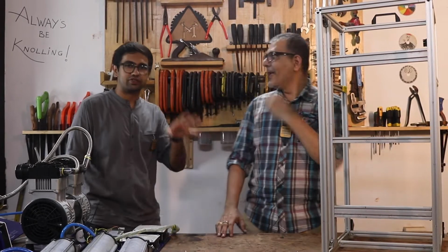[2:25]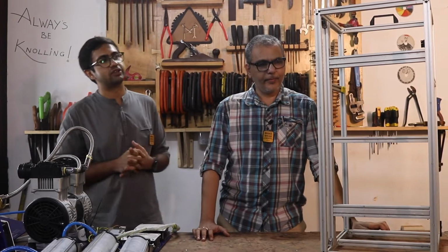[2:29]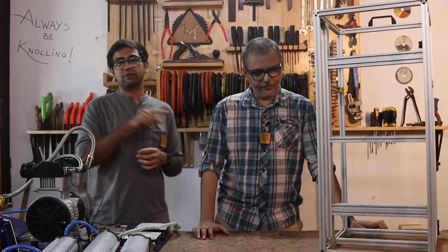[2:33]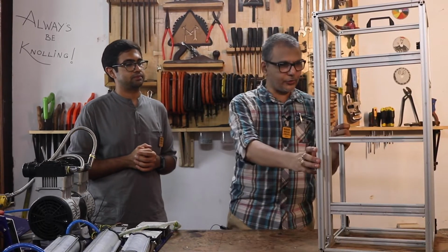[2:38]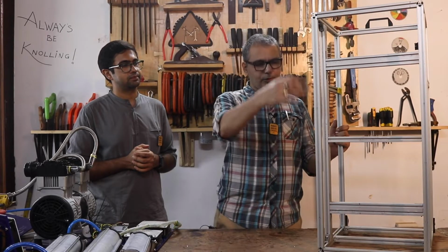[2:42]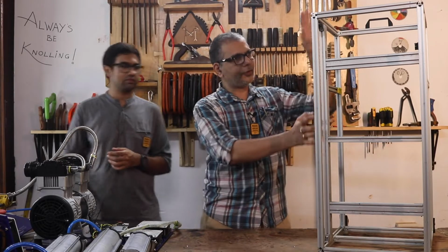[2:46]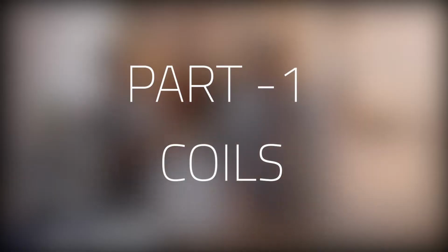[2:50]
All the documentation for the same is available on GitHub. You can go through that and be able to cut this out into the right dimensions and put it together. We also have a quick time lapse showing how this is done. We have the dimensions, we have a drawing that shows you how it goes together, and we have an assembly manual that shows you all the different steps of getting from separate pieces to this assembled structure. All right, cool, let's move on.
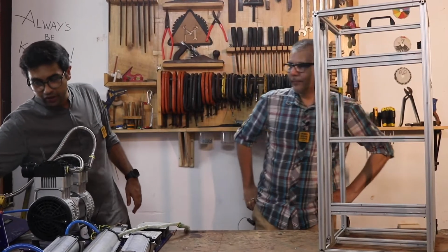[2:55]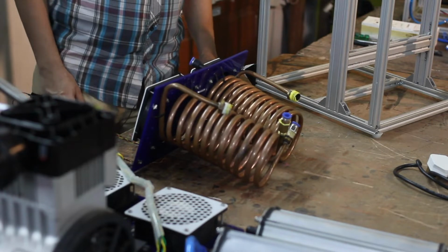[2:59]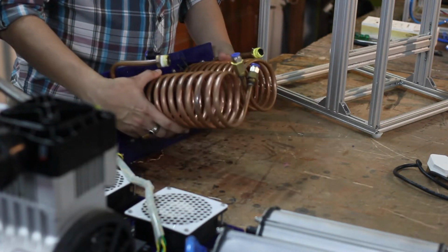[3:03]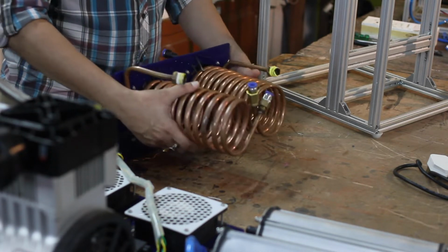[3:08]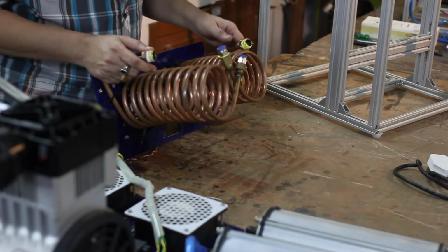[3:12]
The next sub-assembly that we want to talk about is the coils, the copper coils. Are they just to make it look cool, or do they have a real purpose in it? Well, these aren't springs for sure. These are hollow copper pipes that take in hot air and spit out cold air. How cool is that? Nice.
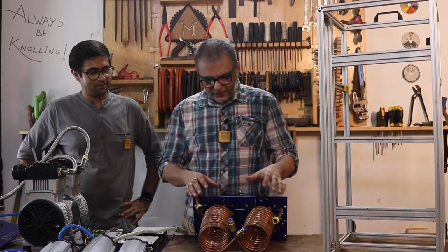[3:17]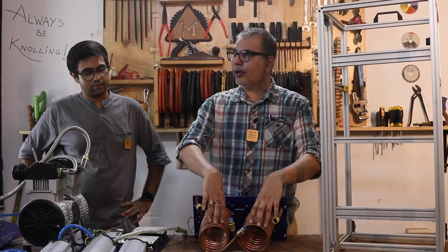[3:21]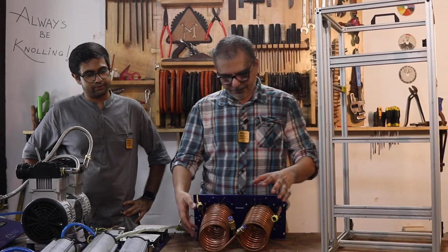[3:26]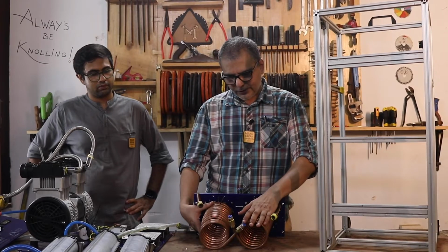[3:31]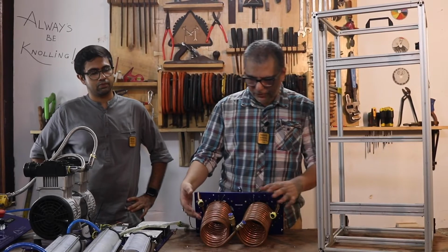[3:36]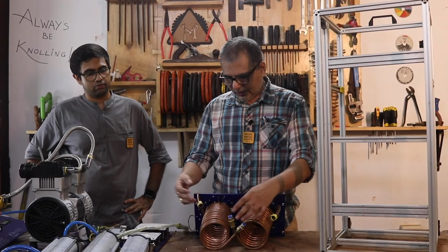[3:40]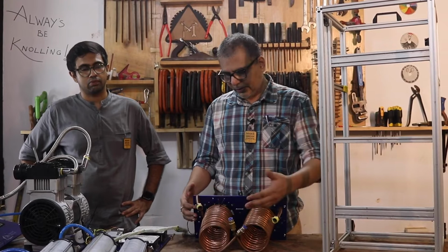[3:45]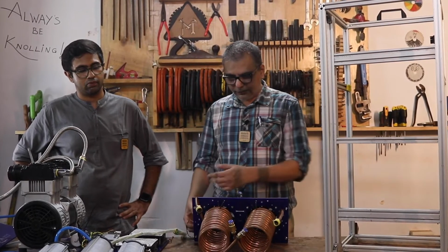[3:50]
Okay, so this is actually split into two parts. One is the part that involves coiling the coils, and the other part is assembling this. Now, coiling takes a fair amount of practice. We wasted a few coils getting to this kind of perfection. So you're going to have to be patient about this part. And the coils have a hot end and a cold end. The hot end is usually at the top, and the cold end is at the bottom, because hot air rises up. So we want all the hot air from here being sucked out by the fans.
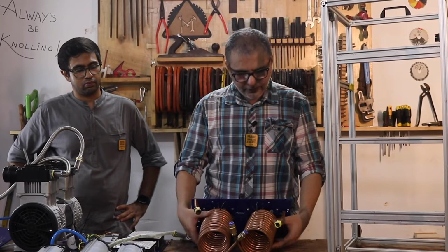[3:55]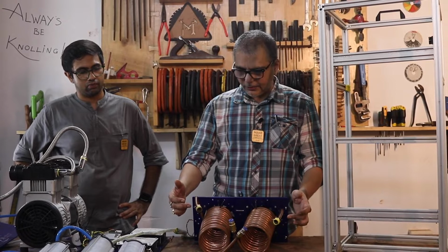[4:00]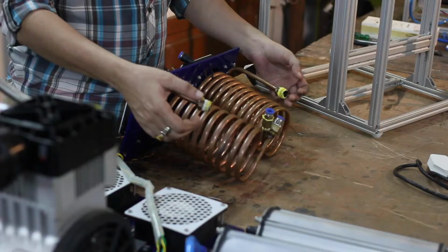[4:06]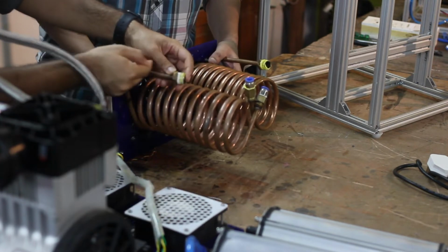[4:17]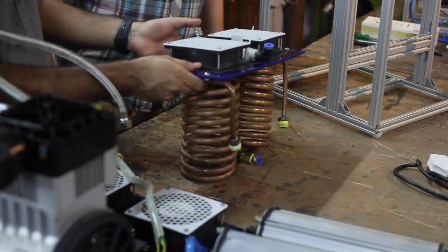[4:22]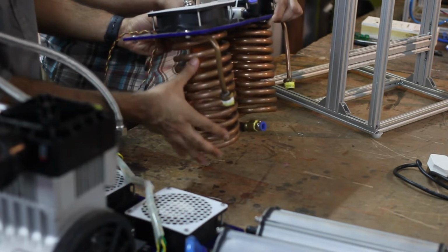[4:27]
Your assembly could vary a bit, but essentially you need to make sure that the coils have the connection fittings for the hot end and the cold end, based on how you're making your fittings. In our case, we have a male fitting here and push fittings here for the cold end. Eventually, you will have your compressor connected to this part. So your air is going up into this part, somewhat like this. This is how it looks. You have your air coming in from the compressor, going right at the top of this, coiling all the way down, cooling as it goes down, and then coming out of here.
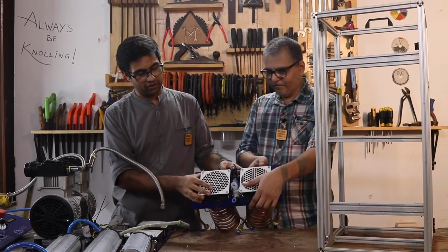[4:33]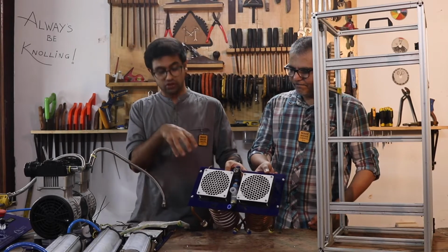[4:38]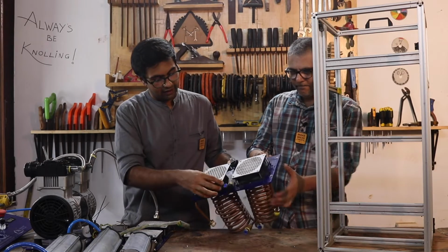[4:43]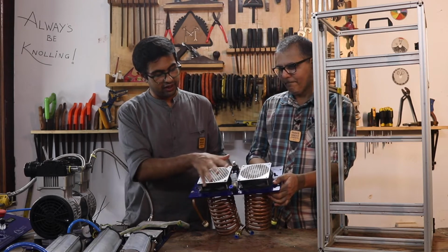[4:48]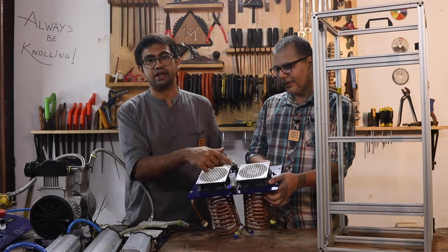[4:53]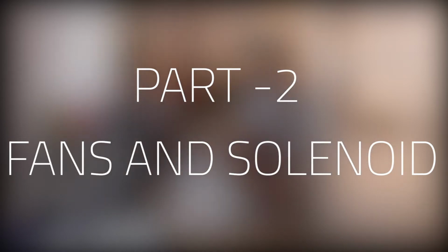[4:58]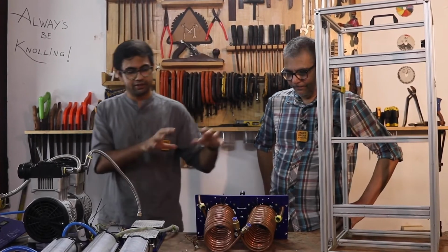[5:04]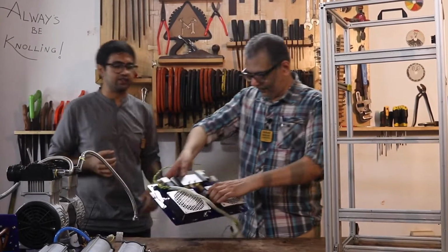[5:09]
On the top, you have two fans that are blowing air downwards through the coils onto the compressor heads, which we'll talk about in a bit. This is part of a different sub-assembly, which we'll talk about a little bit. This is where we are attaching this to the oxygen sensor. So that takes you through the cooling coil subassembly. Moving on to the fans and the solenoid.
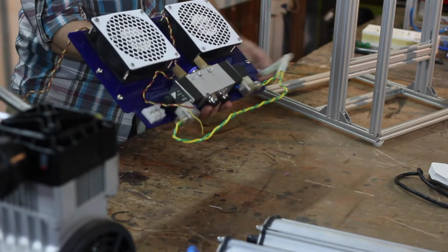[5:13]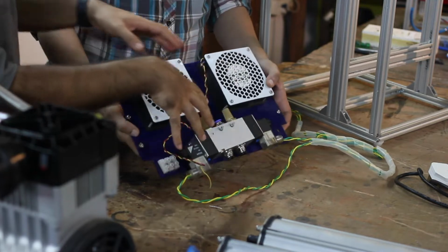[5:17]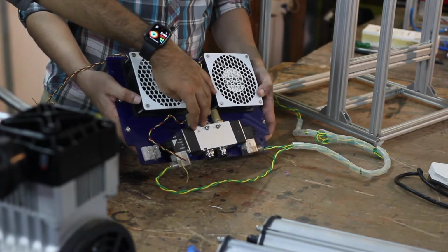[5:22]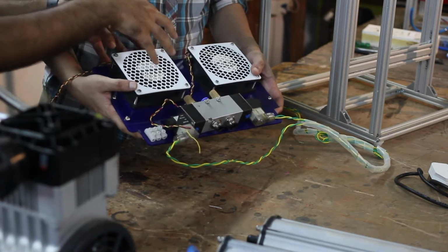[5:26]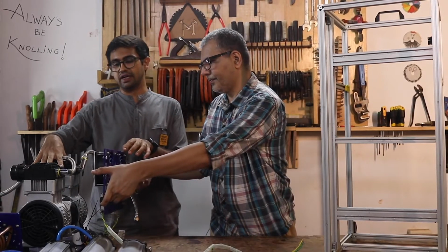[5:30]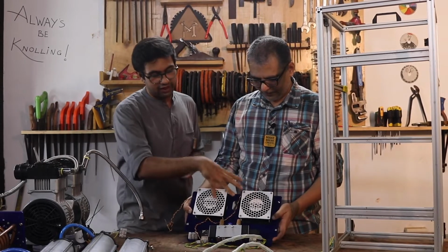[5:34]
So, you want to walk through? Sure. For the next subassembly, which is about the cooling fans and the solenoid valves, over here you have two cooling fans which are pointing directly towards the compressor. That's how it is pointed once it's on the frame. They're blowing air directly towards the compressor heads.
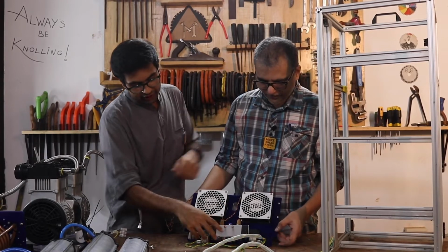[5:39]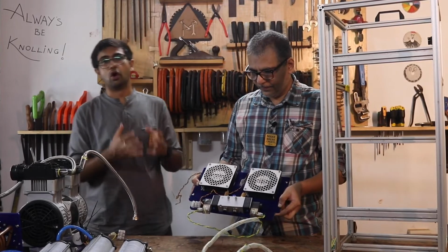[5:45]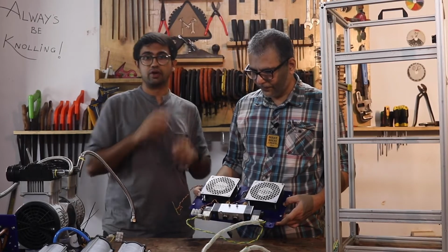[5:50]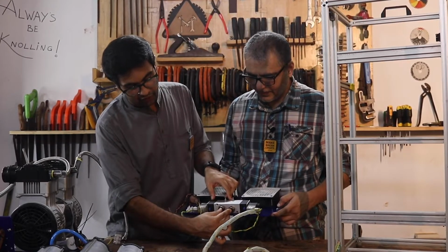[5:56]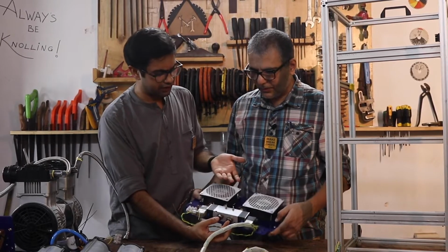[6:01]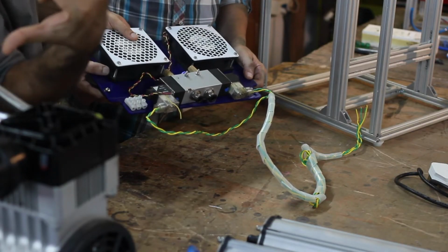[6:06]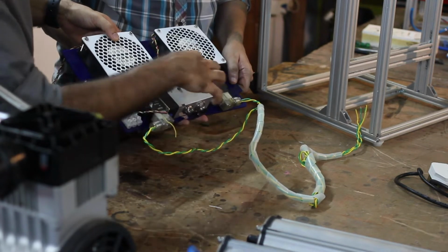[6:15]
And this, which is pointed right below, is the solenoid valve, which is controlling the flow of air in and out of the sieves, which we'll talk about towards the end when we're talking about the assembly. Basically, this part of the solenoid valve is the outlet that goes to the sieves, and this is the inlet where the main air is coming in through the compressor. The air goes through the moisture separator and the compressor and comes in right here. And this is where the outlet is, which goes directly into the sieves.
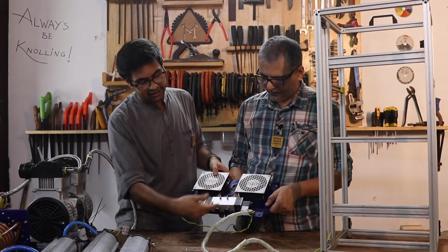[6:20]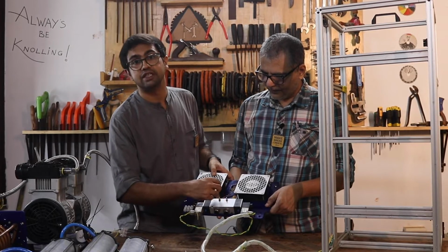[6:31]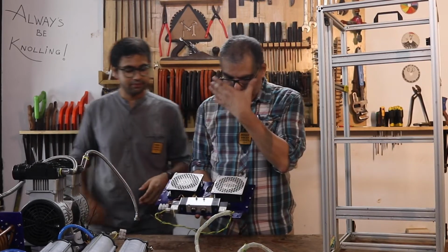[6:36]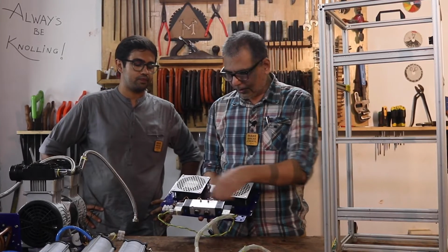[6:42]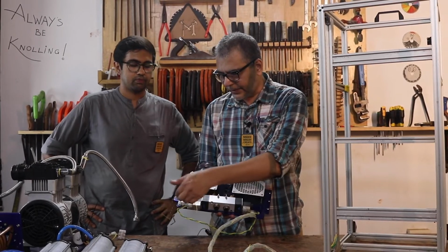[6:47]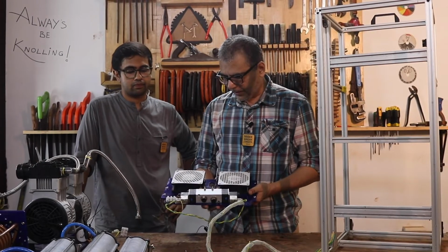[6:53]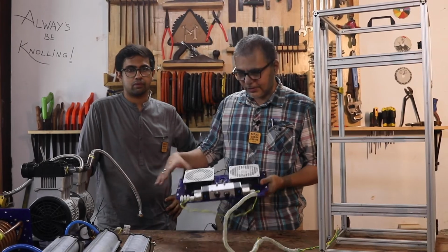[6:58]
And these two are the silencers. When the PSA system is flipped and it is exhausting air through the sieves, the air is exhausted out through these silencers to dampen the noise. So the silencers help reduce the sound of the machine. We also have these two coils which turn the solenoids on and off, so they are wired up. We have a connector here where the compressor wires come in, so that's a connector for the compressor. And finally, we have the wiring for the fans that goes to the electronics subassembly.
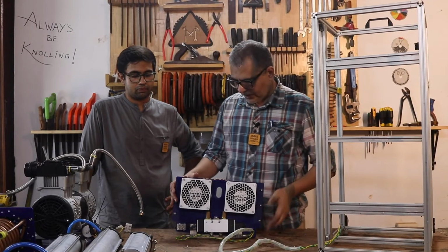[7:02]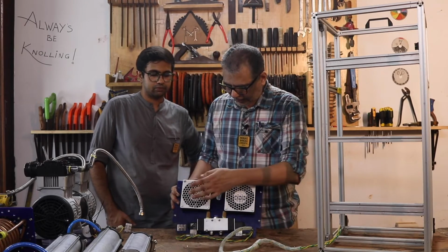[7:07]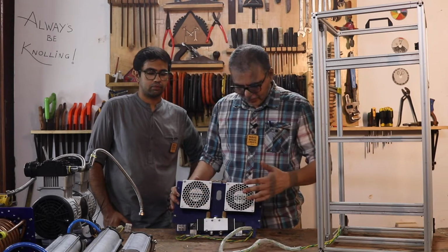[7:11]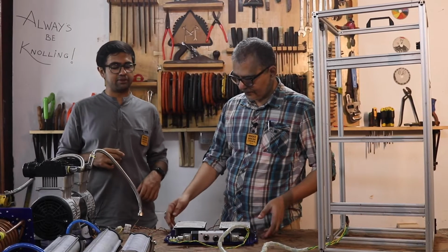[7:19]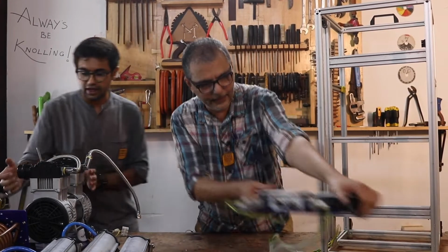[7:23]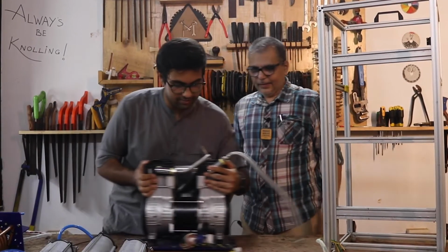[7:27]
So that's the whole cooling fan assembly. We have some laser cut grills here, but you can use a stainless steel grill or whatever is handy to keep this protected. So that's about it for the subassembly for the fan and the solenoid. Get that out of the way. Next, we're going to talk about the compressor.
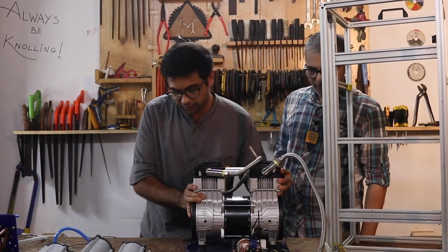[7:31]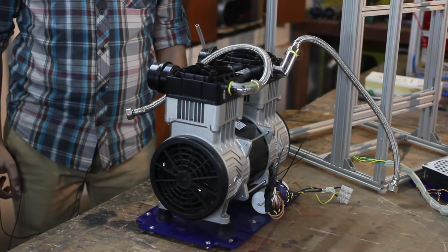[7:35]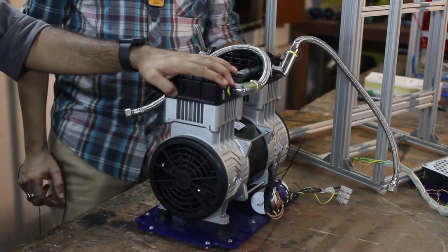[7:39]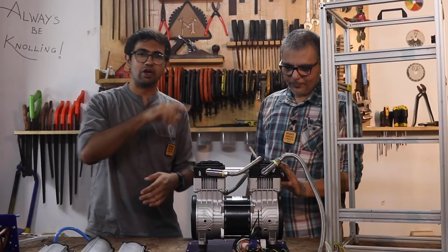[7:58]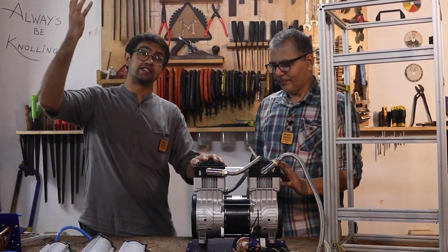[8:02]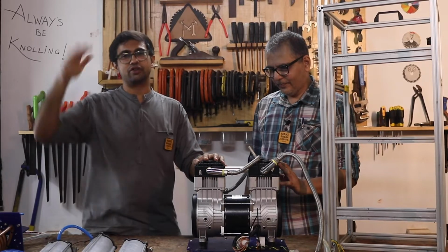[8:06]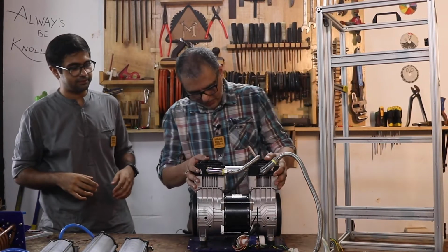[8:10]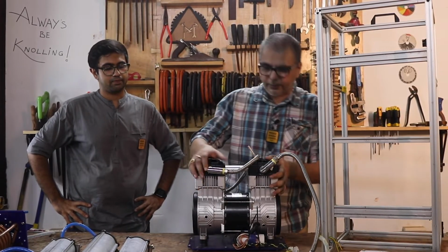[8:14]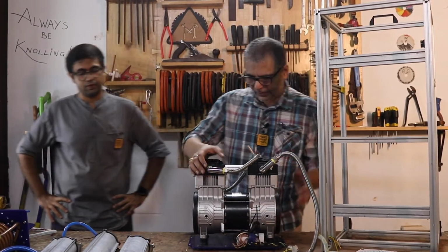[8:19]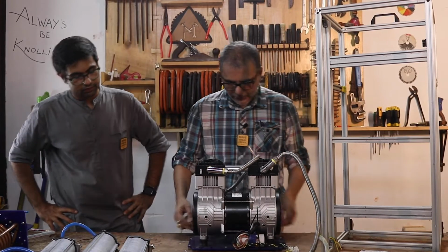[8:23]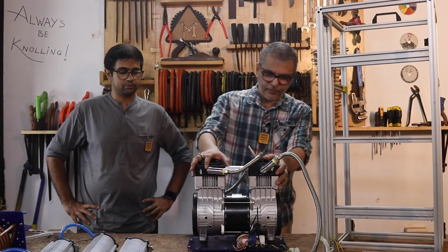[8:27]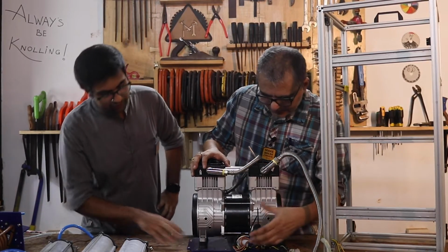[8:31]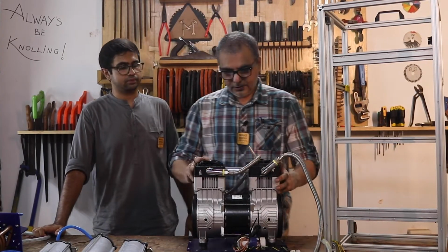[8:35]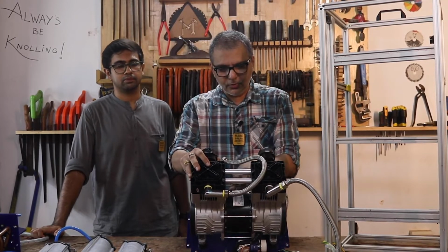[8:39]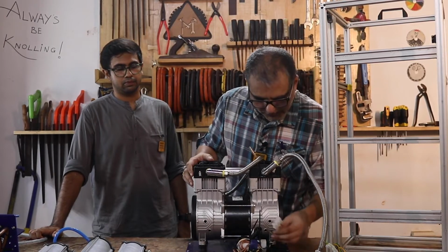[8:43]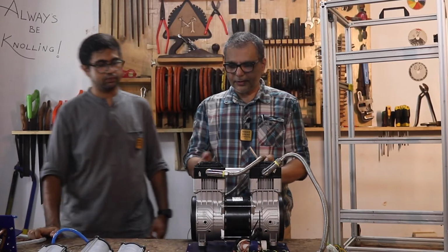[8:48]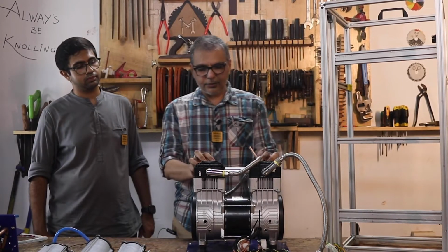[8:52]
The compressor always has a capacitor. There's a diagram shown on the body of the compressor over here that tells you which wires go to the capacitor and which go to the power supply. So that's the supply for the compressor. These are the inlets. These are inlet baffles that act as noise reduction elements. Otherwise, it gets too loud, so you need to have these.
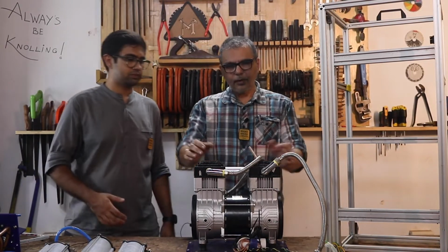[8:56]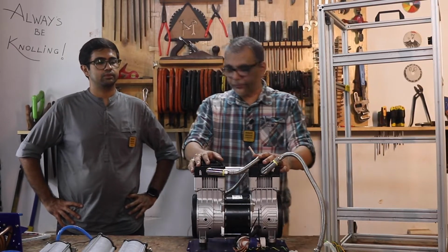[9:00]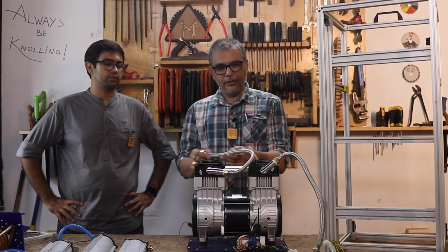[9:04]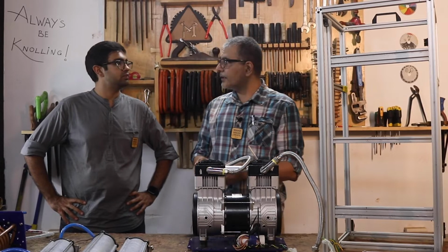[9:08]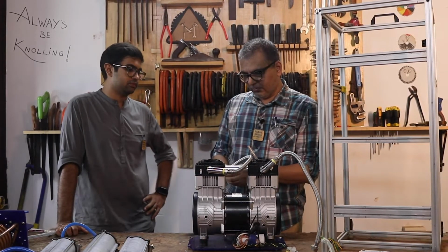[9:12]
These are the outputs. Once the air gets compressed, it becomes fairly hot, so these tubes have to be rated for a high temperature. I think these are 75 or 120 degrees, something like that. But the higher temperature they can withstand, the better.
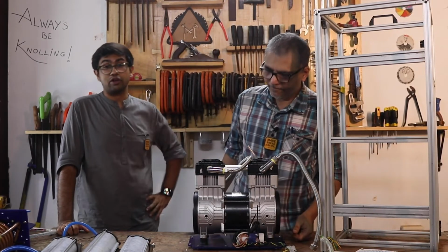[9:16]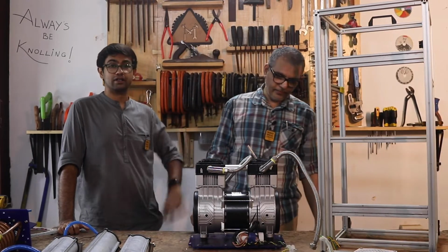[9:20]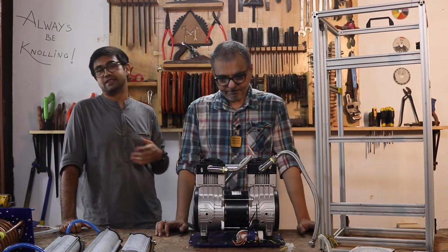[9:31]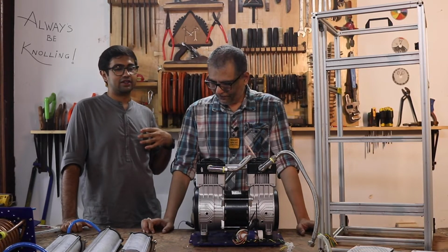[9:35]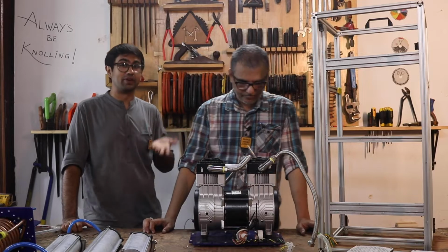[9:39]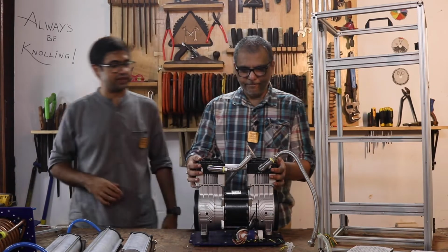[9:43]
The compressors are oil free as well, and that's very, very important because any oil in this entire oxygen concentrator system is not good, because technically you're breathing this air, or highly concentrated oxygen. So you don't want any oils coming in. Plus, oil is combustible with high levels of oxygen. Oil can combust, and you don't want that in the system either. So that's one of the reasons why we're using oil-free compressors over here.
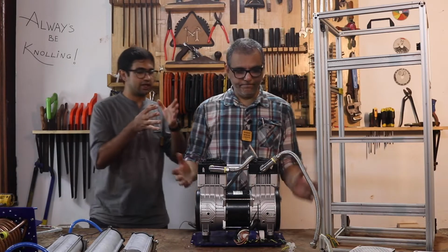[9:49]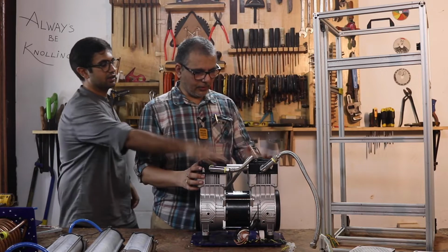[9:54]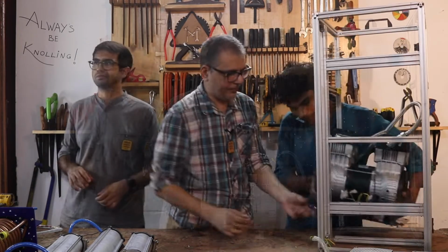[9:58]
We need Selish to help us set this up while we talk about the next subassembly. Selish, isko andar dalo. Leke fit karo isme. Yeah.
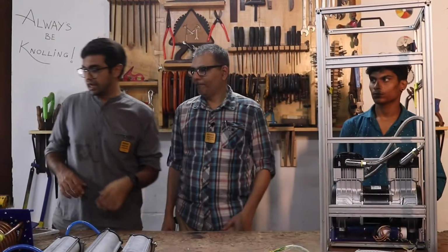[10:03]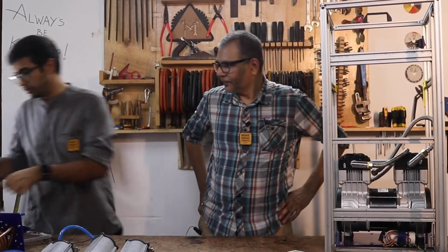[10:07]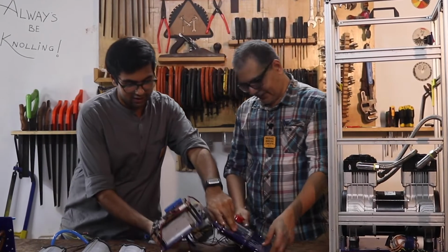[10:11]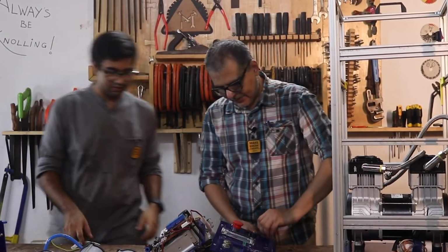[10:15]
Next up, we have the electronics and the front panel subassembly. Anul, yep, I'm going to help you. How this wizardry works. Okay, this looks like a bit of a mess, but it's again in two parts.
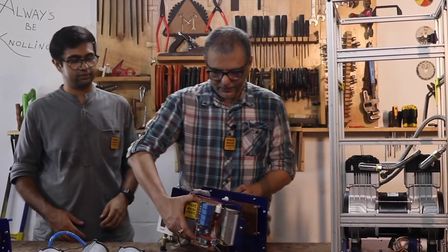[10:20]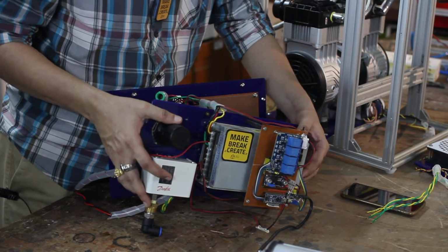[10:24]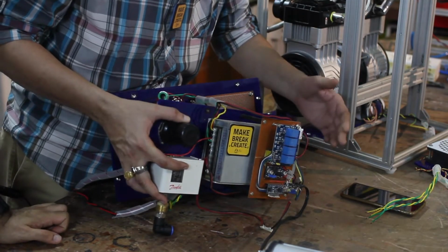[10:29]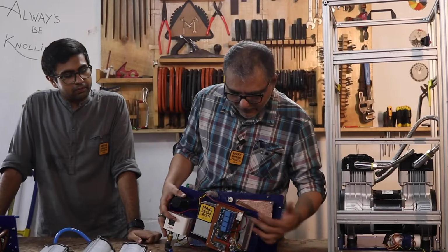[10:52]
This part holds a lot of the electrical items. This is the main power supply, the 24-volt DC power supply that runs everything on this machine. We have the main microcontroller here, the Arduino Nano. We have a kind of buck converter that takes 24 volts and makes it low voltage for your microcontroller. And we have a relay card that turns on and off the various solenoid valves and stuff like that. And the compressor.
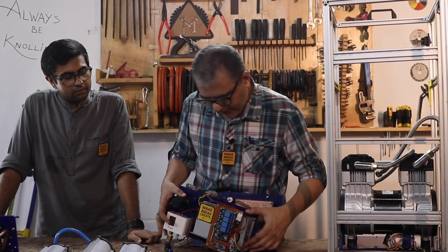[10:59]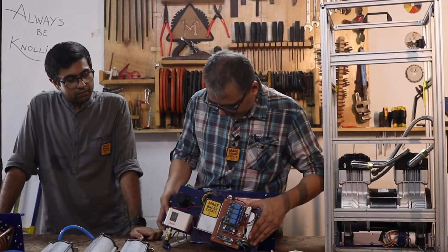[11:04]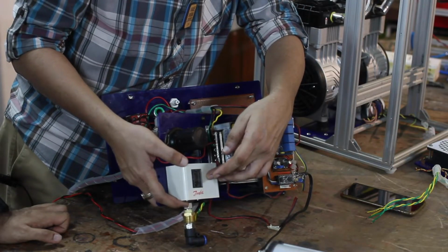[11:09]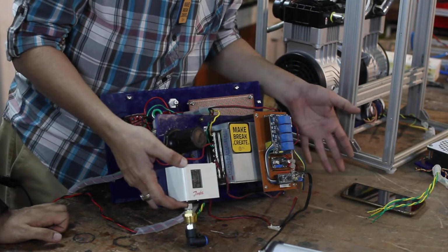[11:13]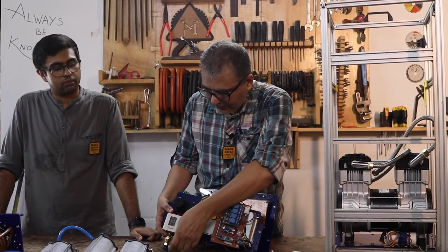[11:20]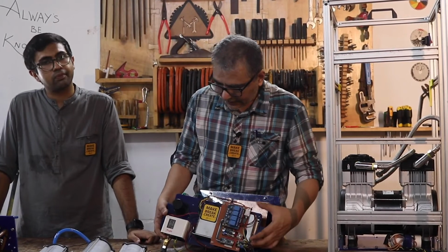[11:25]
We also have a sensor for measuring ambient temperature and ambient humidity. This could be non-critical, really, you don't need it. Another important piece of equipment we have here is this pressure switch. That's kind of important because if for whatever reason there is a blockage within the air path of your system and the compressor pressure builds up, that could cause some serious issues. So this one measures pressure and cuts off the compressor if it crosses a certain limit. So it's quite a nice safety device to have on your system.
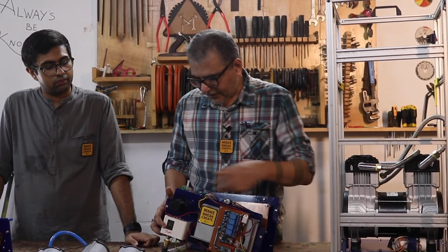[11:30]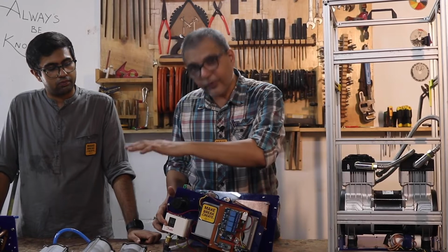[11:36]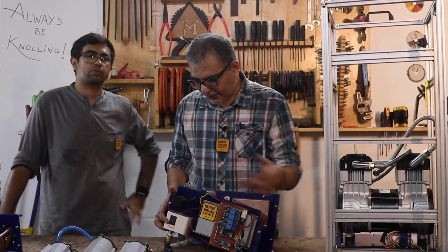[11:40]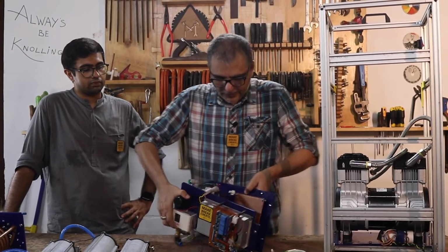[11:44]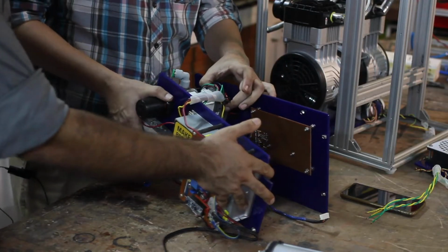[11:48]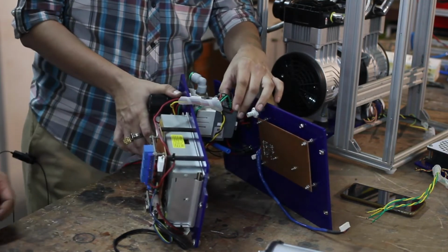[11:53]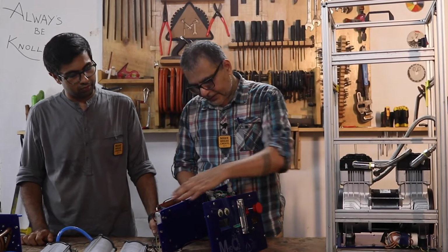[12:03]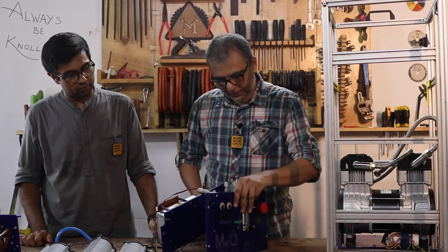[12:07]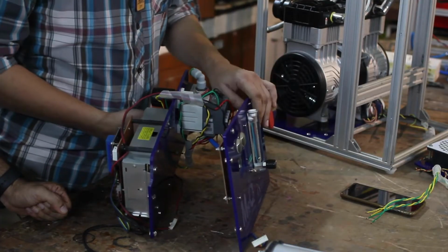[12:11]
This one is the low pressure regulator. So this is before the final oxygen output of your system, where you're controlling the flow rate or the LPM of your system. And on the other side of this plate, we have this big huge contactor that turns on and off the compressor. Now, this one's kind of industrial grade, but you could also possibly use a suitably rated relay in place of a contactor. So that's the intermediate electronics plate that is also coupled to the front panel, which has several elements.
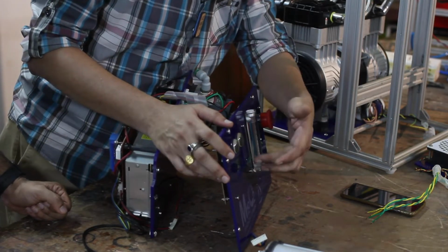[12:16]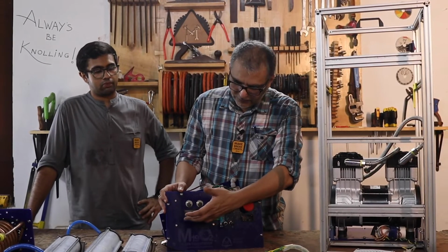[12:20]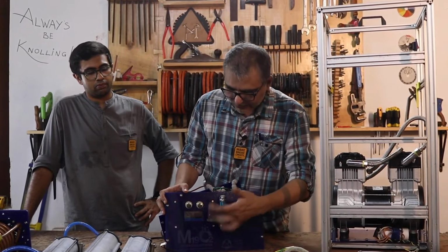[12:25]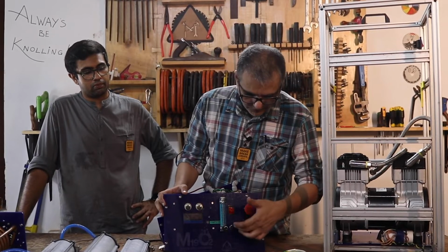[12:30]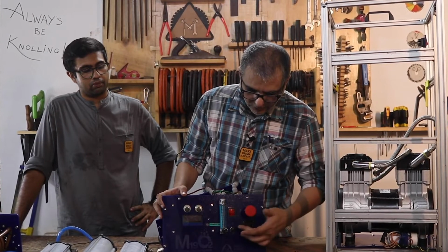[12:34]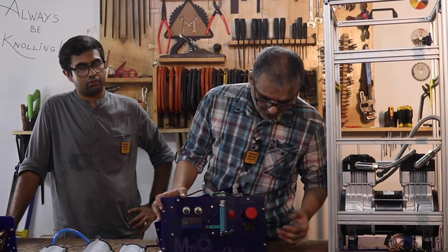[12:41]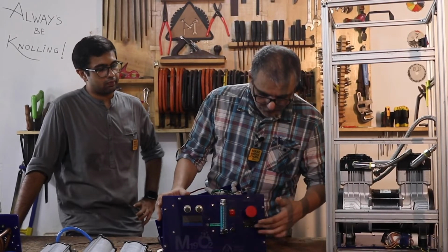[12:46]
We have the display that shows the various parameters: oxygen concentration, flow rate, temperature, humidity, and so on. We have a button here that turns on and off the compressor. We have the flow meter. These are the input mains power elements. We have a switch to turn it on and off, a fuse protection, an emergency button for quickly shutting things off if something goes wrong, and an hour counter, which is useful to know how long your machine has run since you switched it on.
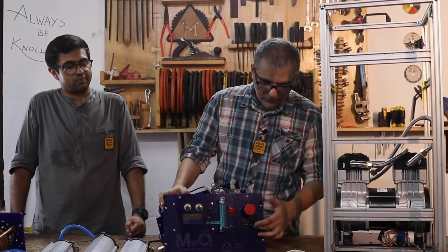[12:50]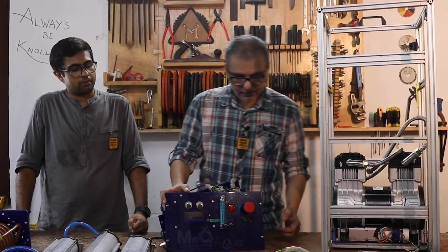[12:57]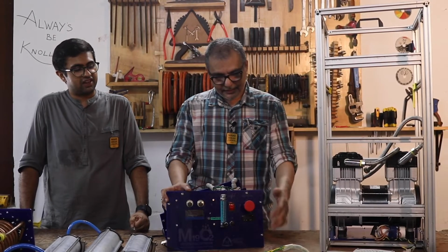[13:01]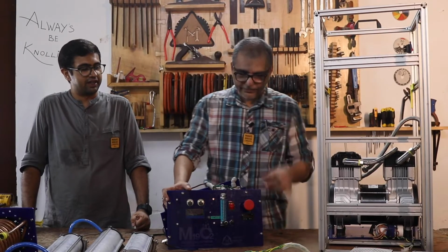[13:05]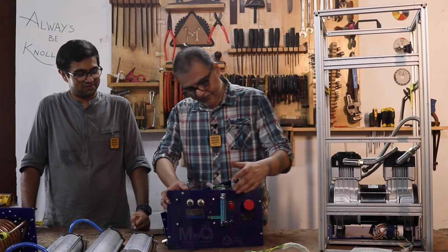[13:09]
So this is a cumulative counter with retention, so it doesn't forget how much the machine has run. And there's no way to reset it from the front, so it's kind of safe. You can't accidentally set it to zero by mistake. Like one of those car odometers back in the day, right? Exactly, yeah, something like that. So, that's about it.
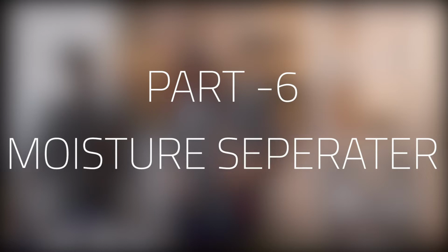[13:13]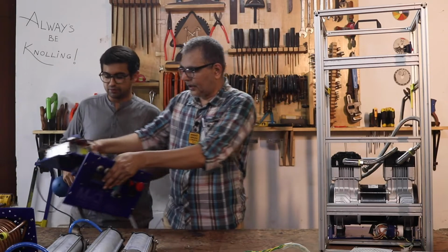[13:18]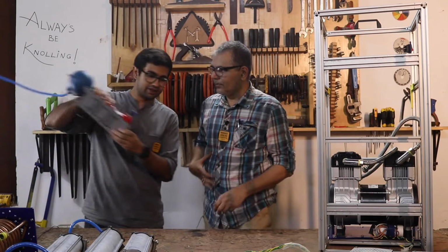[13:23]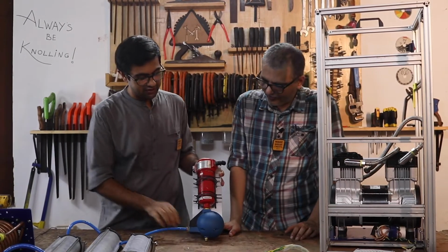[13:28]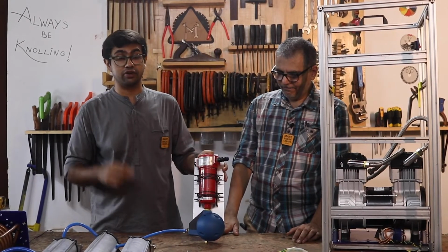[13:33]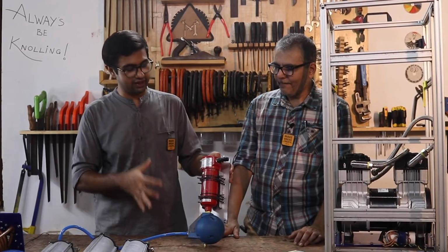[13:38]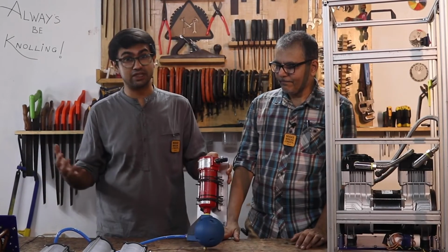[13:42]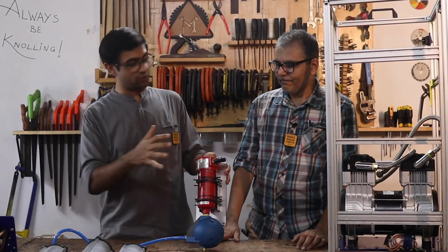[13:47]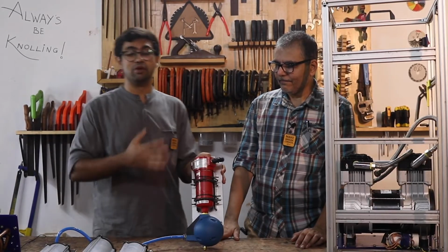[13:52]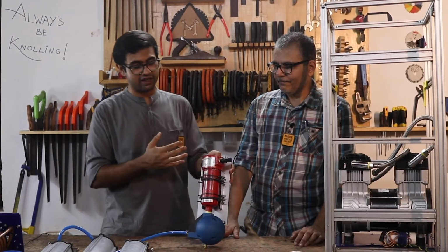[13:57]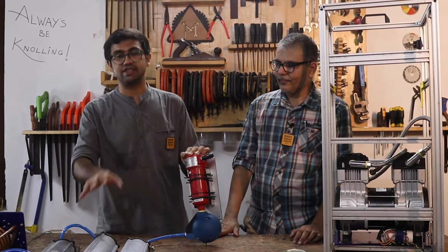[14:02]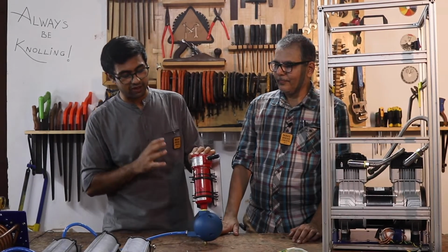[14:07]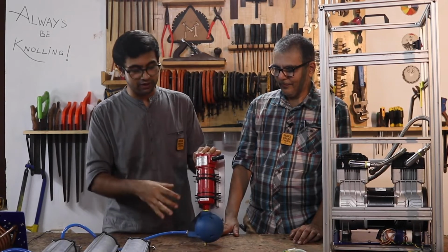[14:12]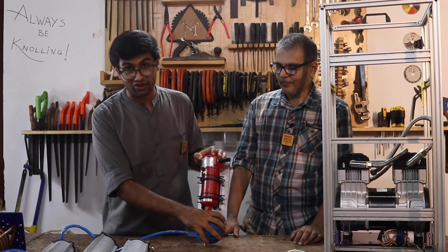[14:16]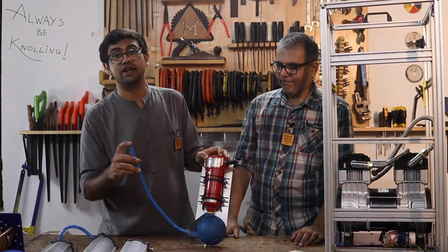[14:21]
I'm going to move this out of the way. Yeah. And I will bring this into the picture. This is one more little wizardry that happens in the system. This guy is an essential component, especially if you're in the tropical climate areas of India and other parts of the world. This is not really part of most oxygen concentrators because they weren't ever meant to be running in the field. What this one does is remove the moisture from the air before it enters the sieve. Think of it as a simple device in between the compressor and the sieves, before the solenoids, removing as much of the water from the air as possible and collecting it into this one chamber right here. And it also has an auto drain, so when it reaches a certain point, it drains out and starts dripping water, sort of like your air conditioners.
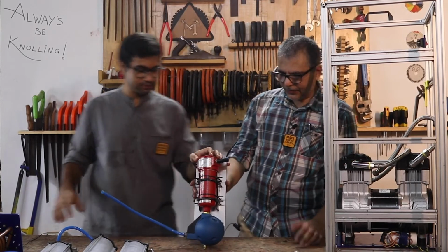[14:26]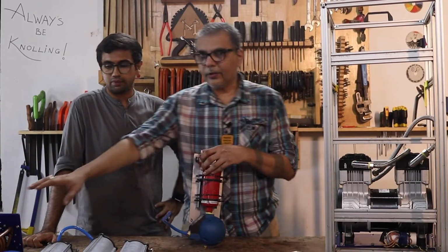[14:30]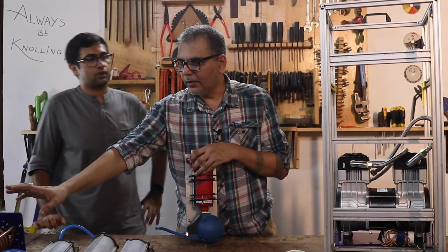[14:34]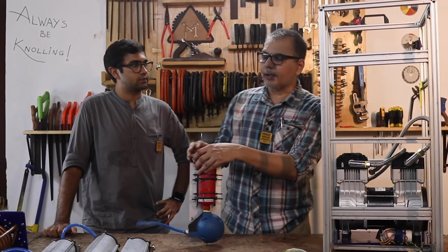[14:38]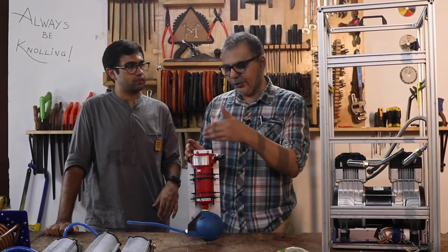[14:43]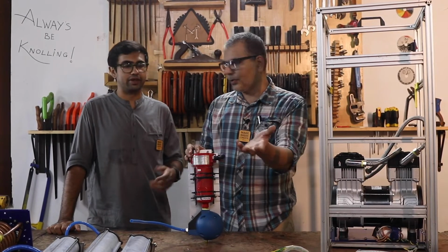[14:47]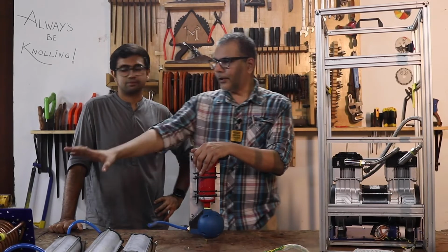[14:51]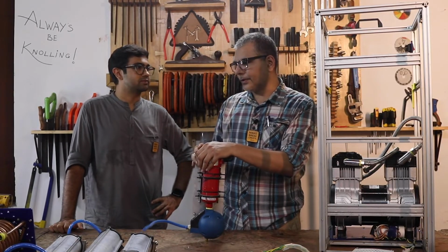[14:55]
Yeah, so this part is important because if you remember, we talked about the cooling coils. Now, once the air cools down in the cooling coil, the moisture there condenses into water. And if you don't remove it using this, it goes straight into the sieve. Right. And that's what messes things up. So most machines have cooling coils, but they don't have a moisture separator, which kind of defeats the purpose, because then you have all the water
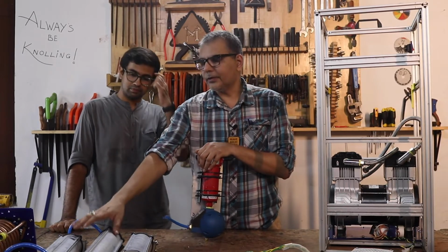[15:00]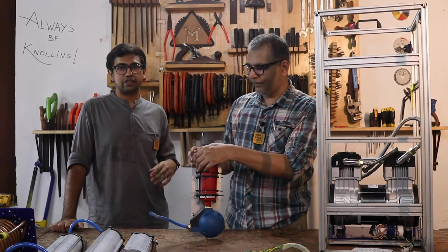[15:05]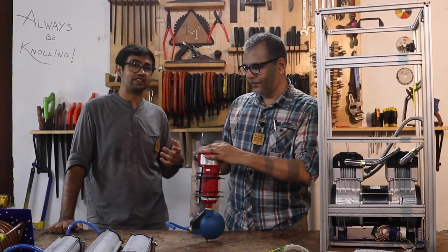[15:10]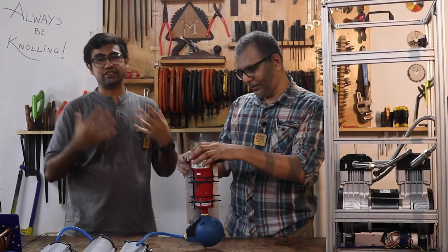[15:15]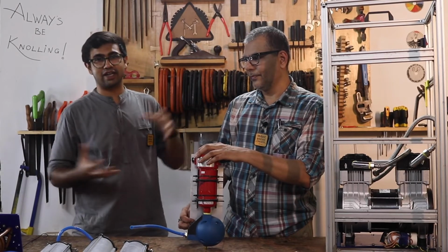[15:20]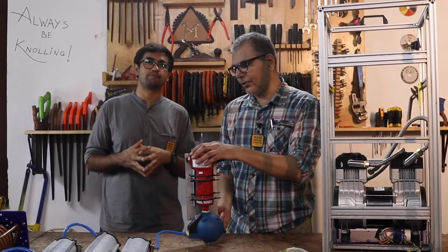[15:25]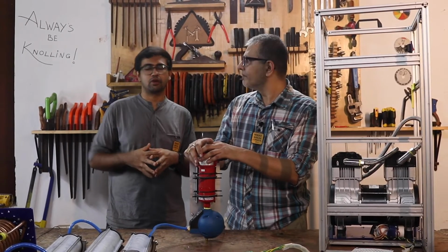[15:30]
and water vapor and the humidity entering the sieves, and messing up the zeolite. And the zeolite loves water. Yep. Just as much as it loves nitrogen and it doesn't let it go, it also loves water. So what that means is, first it's going to absorb all the water and then the nitrogen. So if it continuously keeps absorbing a lot of water, over time it's just going to become like a cake and reduce its nitrogen absorption capacity. Yeah, your efficiency drops down. You have a situation where your machine works but there's no oxygen at the output. Or it keeps dropping slowly. Yep, as time goes.
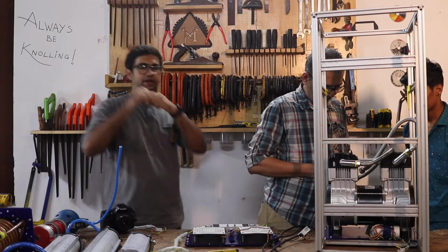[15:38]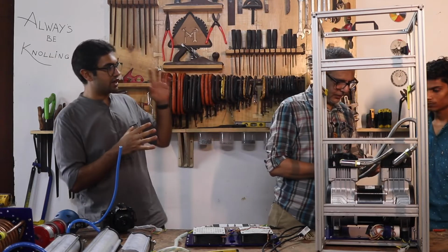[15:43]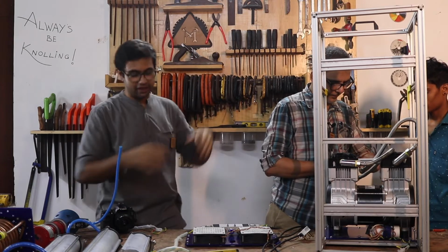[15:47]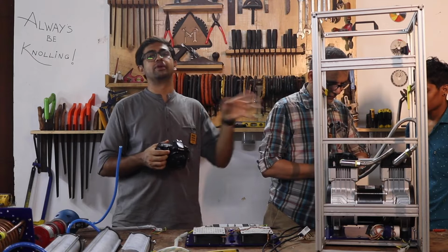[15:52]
Everything back together. So what we're going to do next is that we have Selvesh on Friday and Anul working on this part to put it all together. I'll have an extra camera with me so I can show you a little close up as to what's going on behind the scenes.
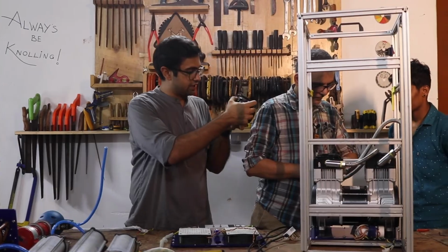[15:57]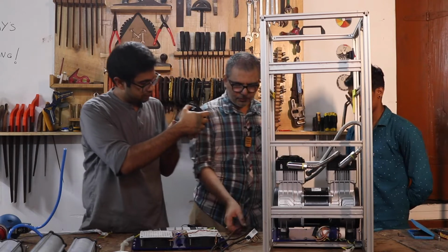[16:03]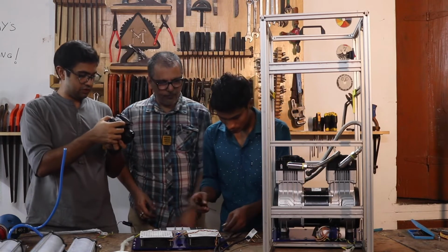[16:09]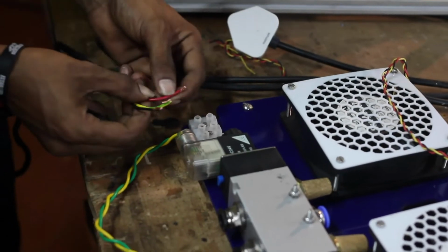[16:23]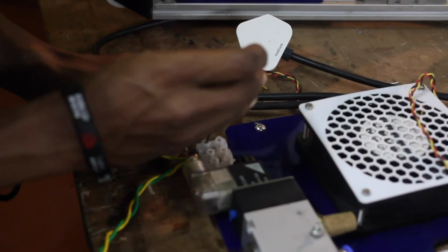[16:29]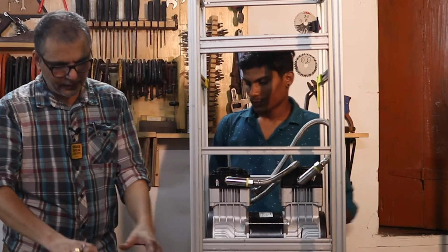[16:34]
First up, Anul right now is ready with the wires. What he's trying to do right now, he's connecting the wires to the fans and the solenoid. This is the main wire that's coming in from power, right? This is the main power, not the fan and the solenoid. This is 230 volts from the outside. Yeah, give it a tug to make sure it's anchored properly.
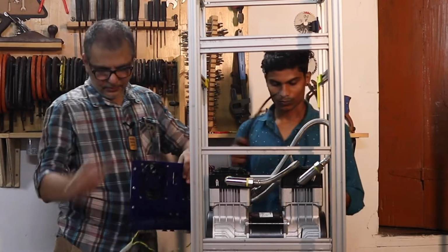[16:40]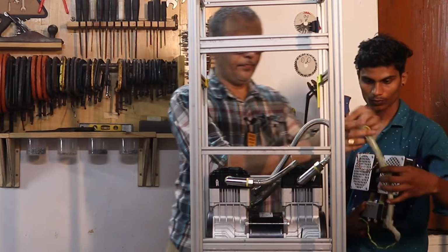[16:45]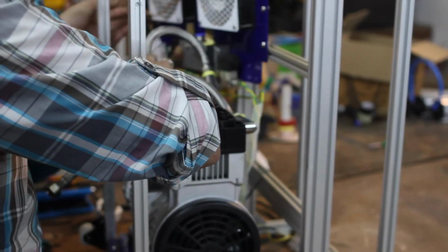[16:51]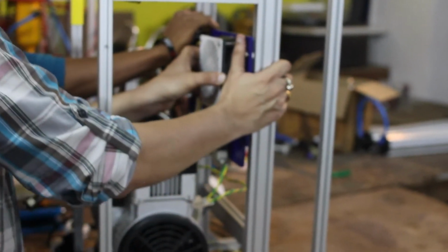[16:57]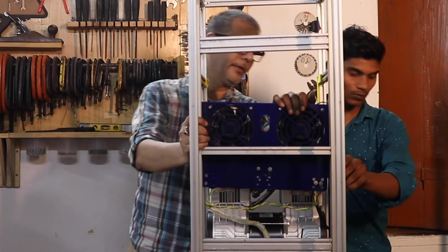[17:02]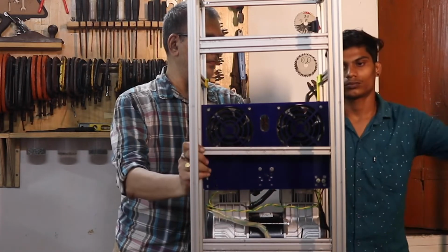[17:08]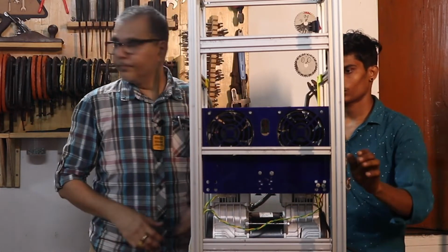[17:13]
Let's take this. We're going to put it from this side. I'm going to bring this out here. So I'll get it now. Alright, so that's kind of fitted. That was easy. Next up, let's fit the cooling coils.
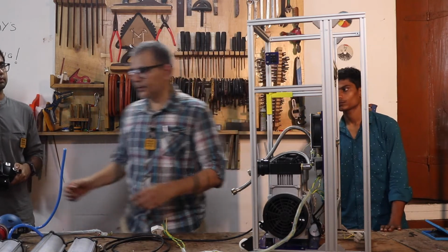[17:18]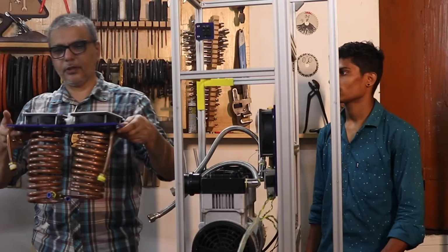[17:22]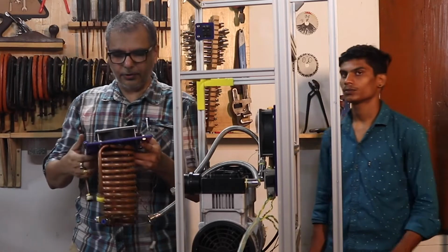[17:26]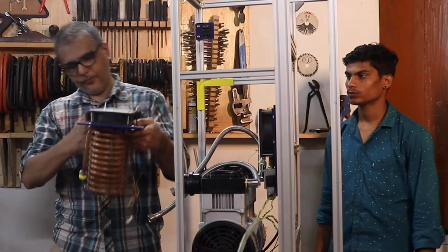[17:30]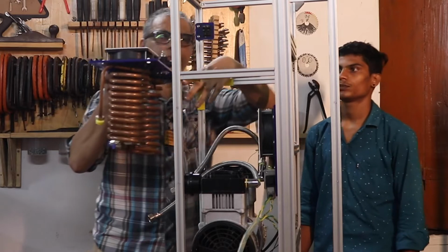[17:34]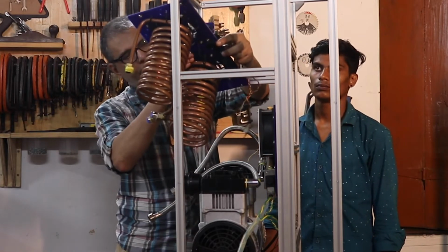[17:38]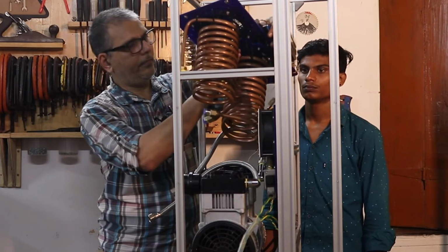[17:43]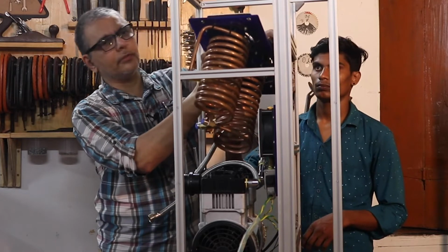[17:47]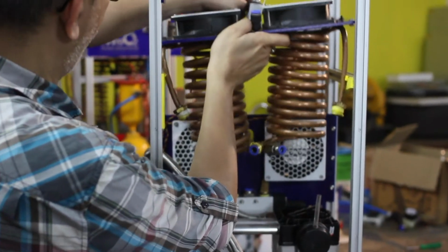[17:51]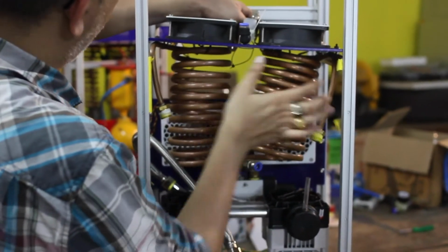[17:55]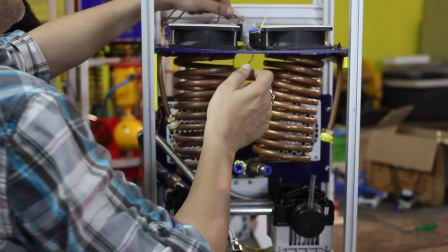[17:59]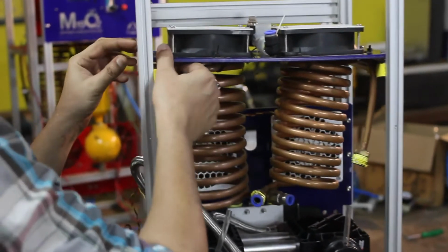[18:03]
That's the next part of the assembly. So here's our cooling coil assembly with the fans and the oxygen sensor and all of that. This part faces out. So I'm gonna put it here. Bit tricky, but yeah, once you've wriggled it around a bit, you should have it in position like so.
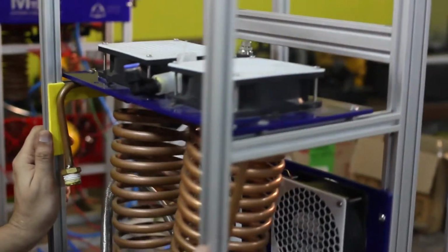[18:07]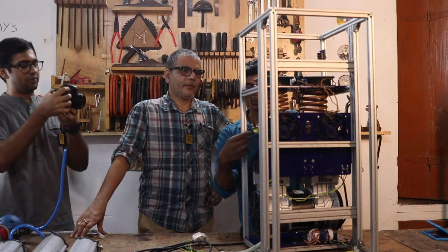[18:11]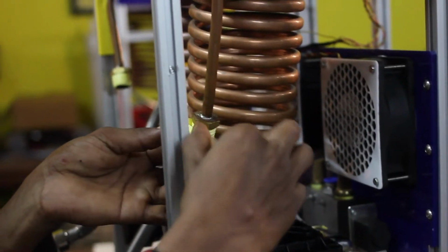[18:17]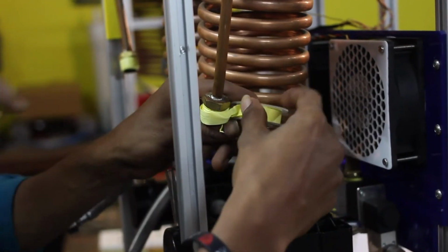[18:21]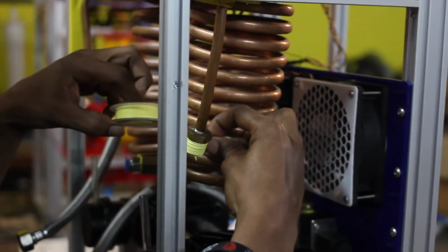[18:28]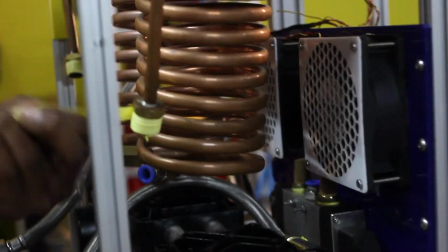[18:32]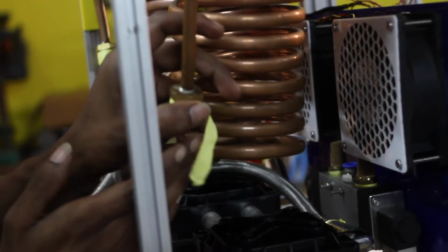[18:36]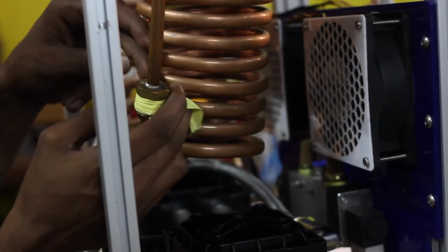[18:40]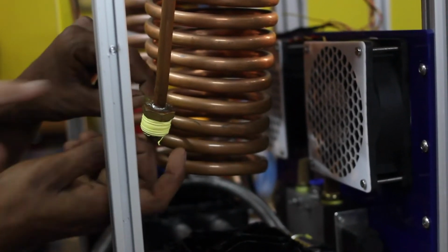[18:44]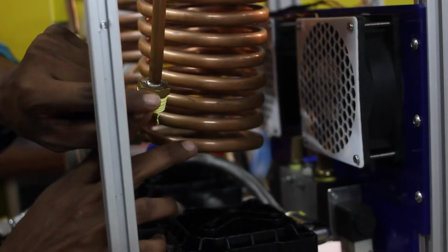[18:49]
We're gonna hook up next. We're connecting the compressor to the cooling coils. So I'm just going to try and show you what's happening over here. Selvesh is currently... Make sure you tell us about the direction in which to wind the Teflon. Because winding the Teflon, you want to go in which direction? The direction which you want to thread the nut. Exactly. You want to put that in the direction of which you're going to thread the nut, just to make sure that it auto-tightens instead of coming loose when you are tightening the pipe to the copper coils. And there we go. That is the Teflon.
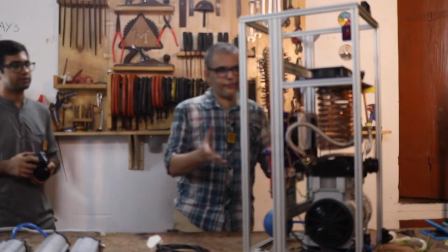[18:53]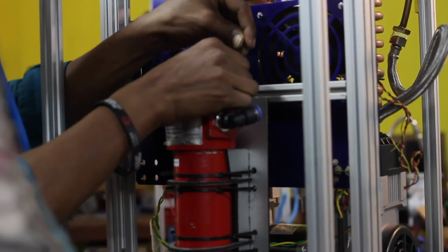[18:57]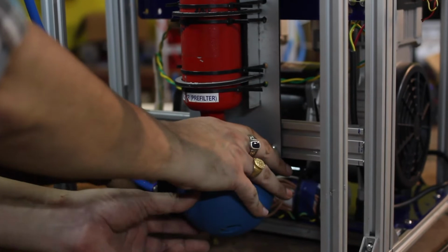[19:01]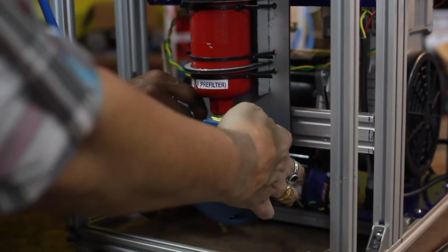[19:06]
Okay, so we have a lot of things in place. Next up, we are trying to see if we can wiggle in the two panels and get them fitted over here. So, all right. This is where Suresh comes in. Suresh, let's go.
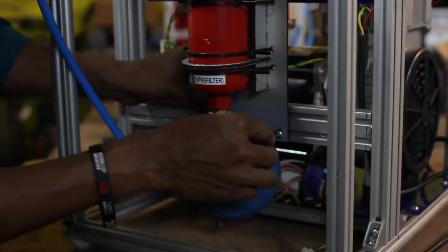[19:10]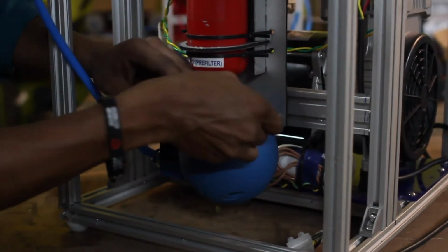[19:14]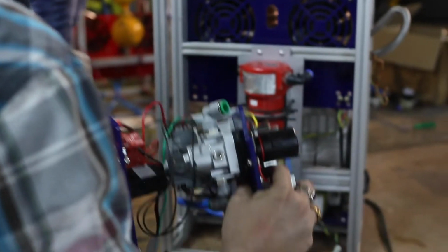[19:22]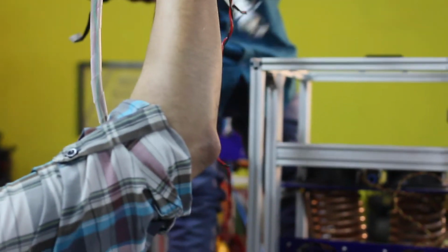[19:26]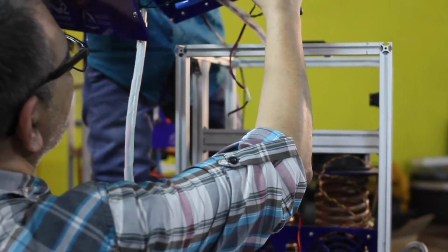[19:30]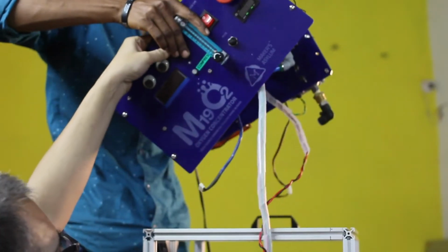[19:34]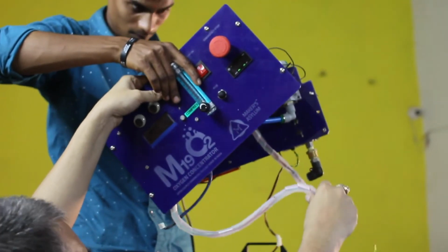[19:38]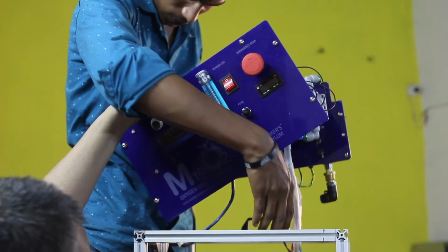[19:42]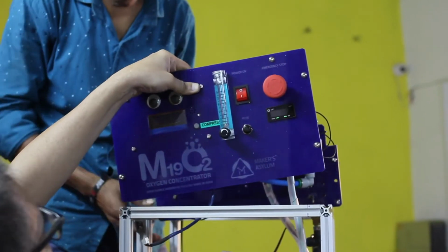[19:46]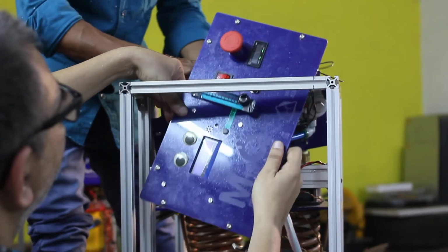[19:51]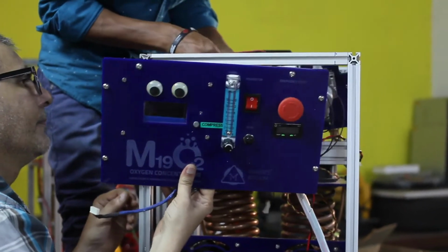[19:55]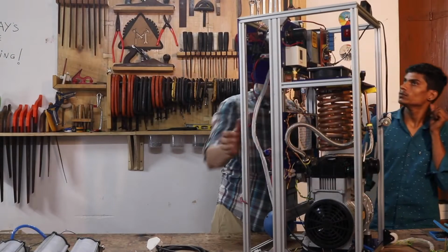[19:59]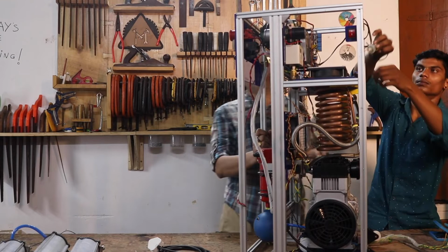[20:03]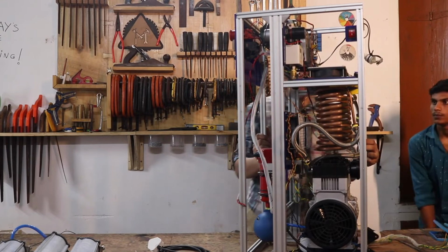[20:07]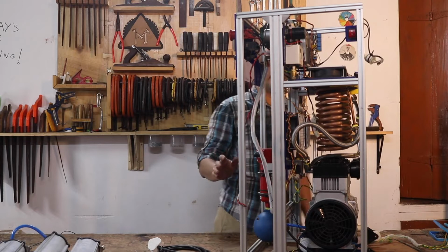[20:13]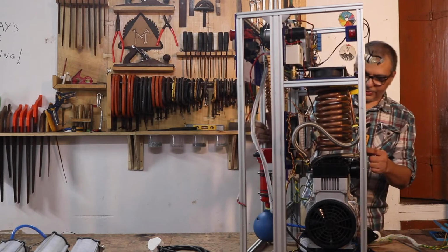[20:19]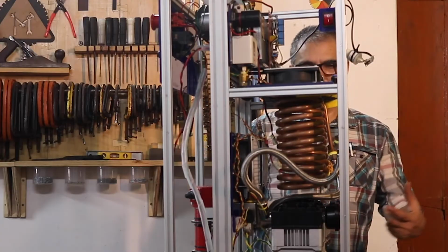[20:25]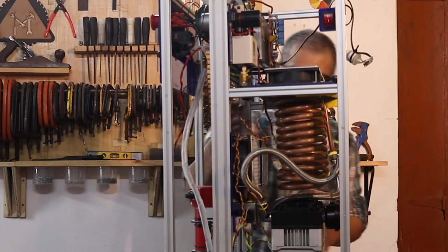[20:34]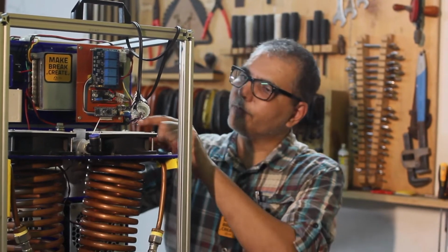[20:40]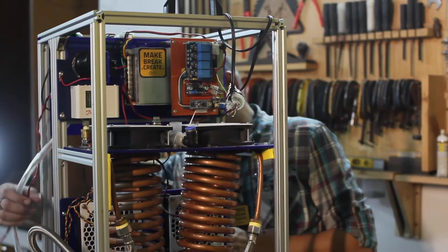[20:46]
So at this point we have almost everything installed in here except for the two sieves and the surge tank, which we'll install at the very end. Next step, once you get here, is to do it in two steps. First, finish up all the pneumatic wiring, so all the pipes that need to go from one place to the other, and then finish off the electrical wiring. So make the interconnection, connect the fans, connect the valves, connect the front panel to the PCB here, connect the mains power and the compressor, these two wires. So that's what we're going to be doing next, over the next couple of minutes.
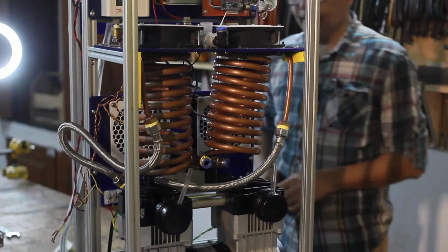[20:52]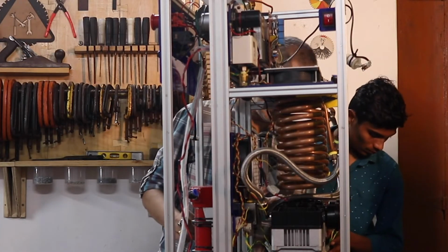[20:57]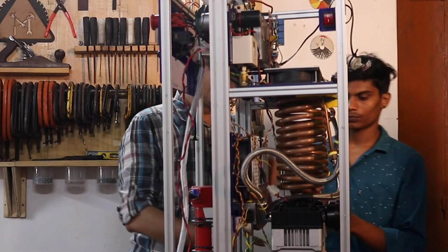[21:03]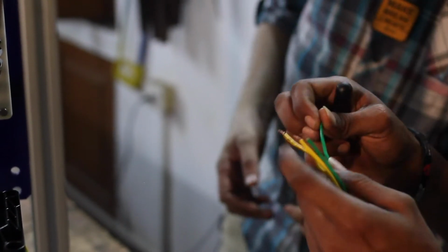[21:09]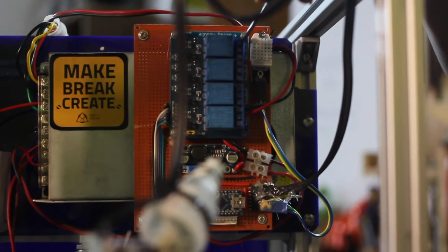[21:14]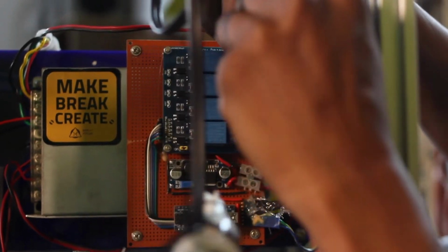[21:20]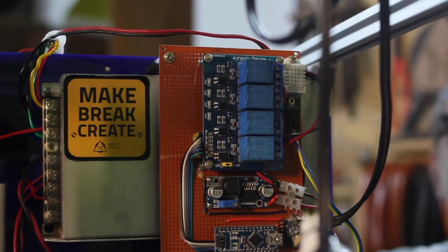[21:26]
Okay, so we have the wires coming from the solenoids, the left and right, they're both being brought out here. And we're going to hook it up to these relays over here. So Selvesh is going to do that. If you have solenoid valves that have indicator LEDs in them, then make sure you check for the polarity before you wire things up. Otherwise, the valve will work, but the LEDs won't show up.
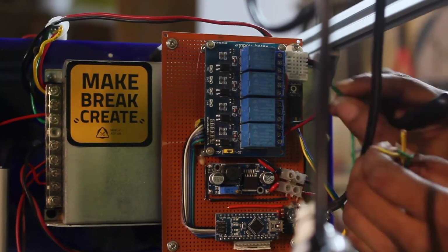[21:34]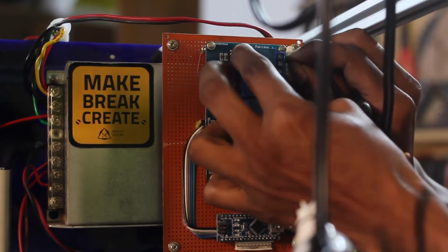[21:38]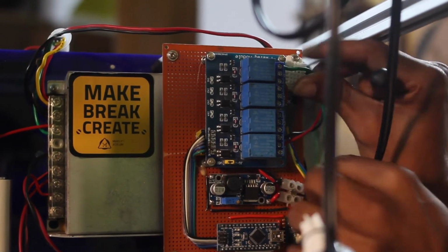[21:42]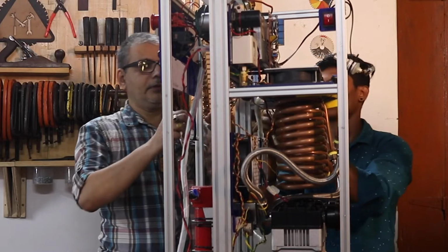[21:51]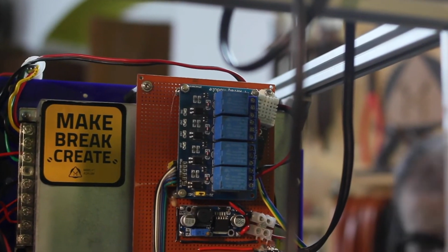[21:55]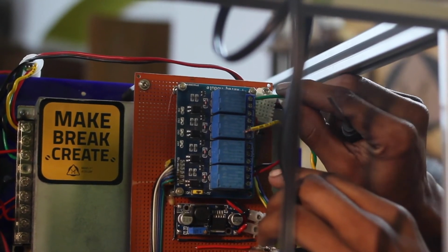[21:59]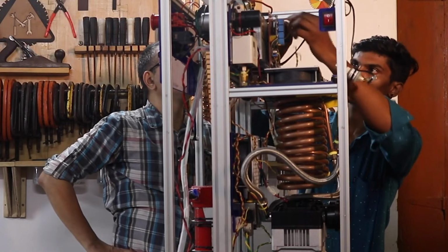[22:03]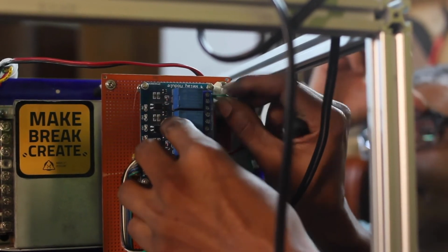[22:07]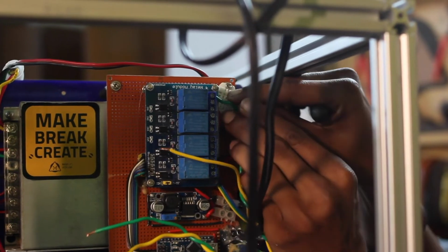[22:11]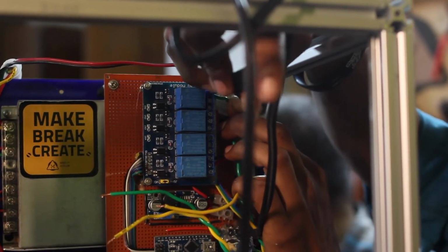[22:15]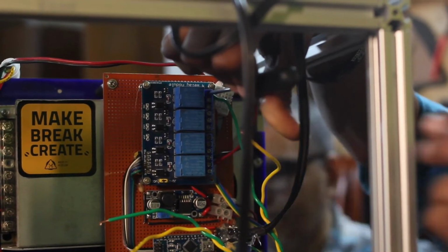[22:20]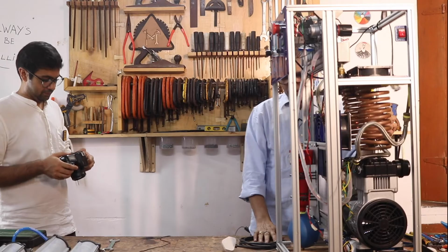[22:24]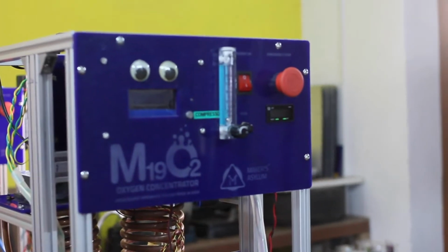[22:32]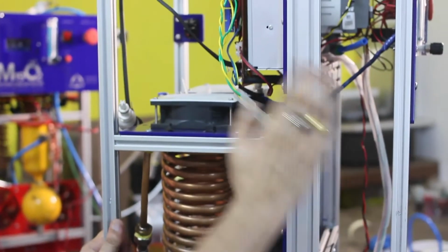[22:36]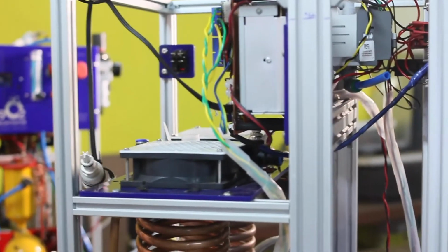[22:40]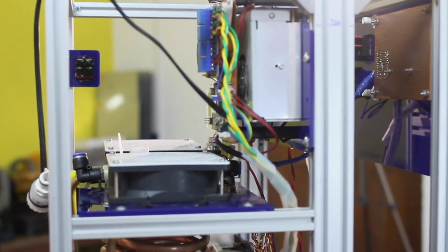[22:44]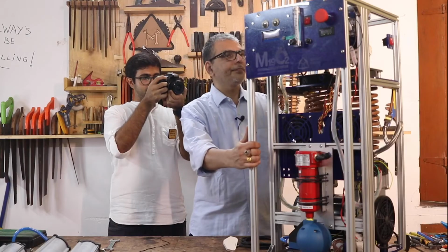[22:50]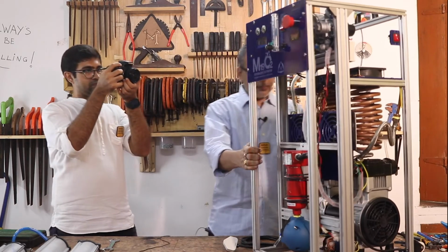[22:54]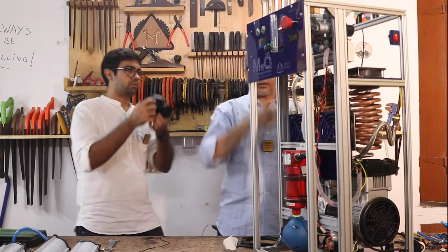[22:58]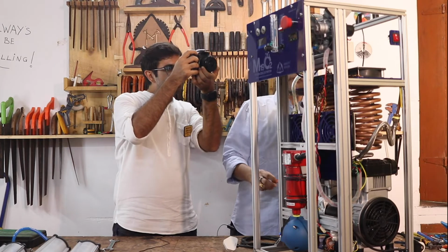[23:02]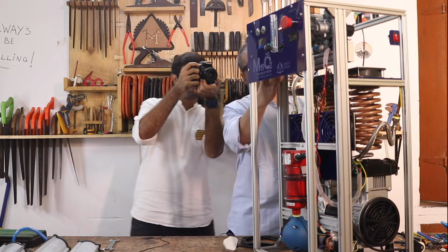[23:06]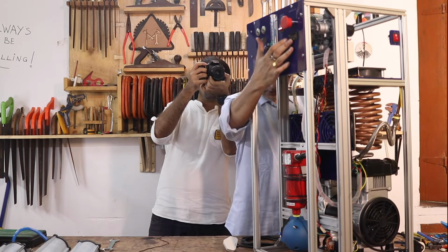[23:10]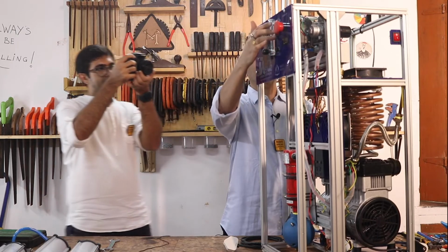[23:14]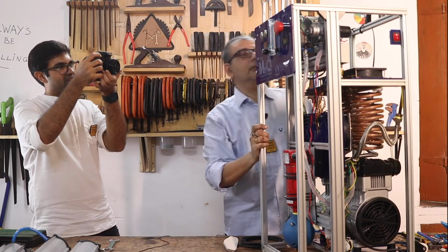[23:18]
We have a mains power switch, we have a fuse, and from there it goes to the power supply that runs the 24 volts through which most of the elements on this machine work. Except for the compressor, almost everything else is 24 volt DC. There's some amount of wiring required here, for which you need to refer to the electrical diagram in the assembly manual. But that shows you how to wire up the power supply, the electronics, the contactor over here. There's an hour counter here, so how to wire that up, the switch, fuse, and the emergency switch, stuff like that.
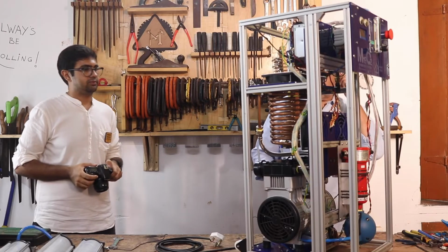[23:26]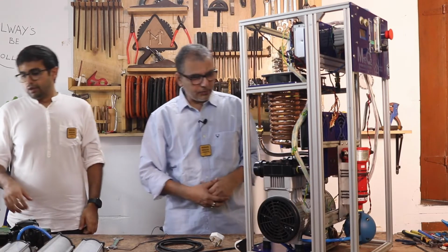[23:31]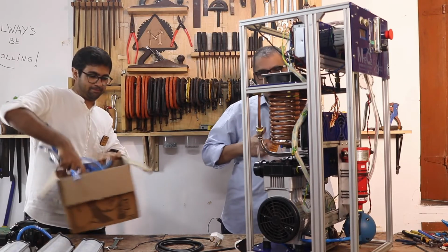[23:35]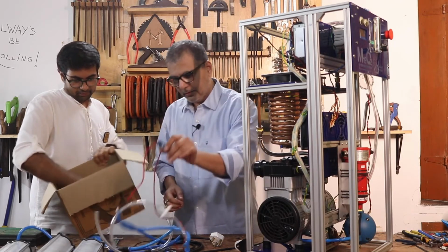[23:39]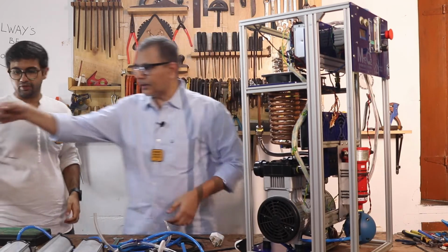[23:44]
With that done, the next step is to connect up all the pneumatics. Nice. All right, let's do this. Okay. We don't need this right now, so let that go in.
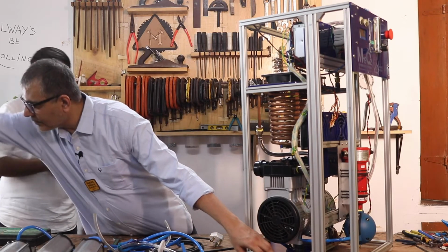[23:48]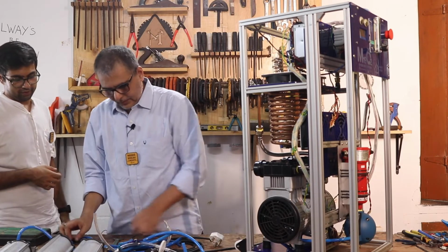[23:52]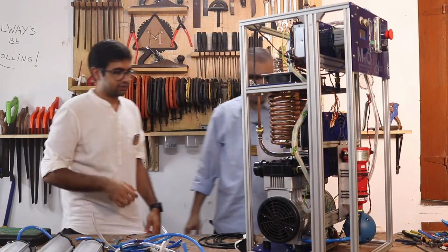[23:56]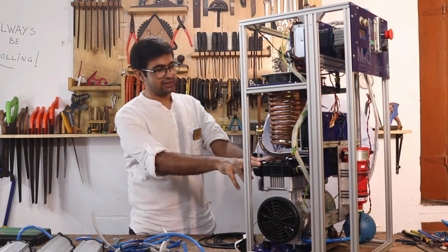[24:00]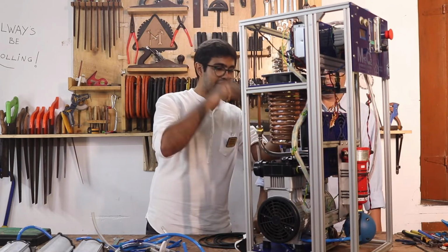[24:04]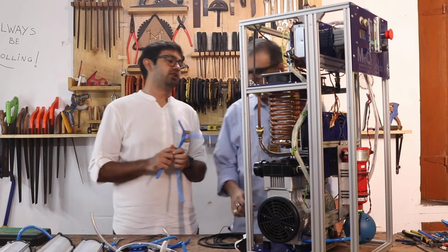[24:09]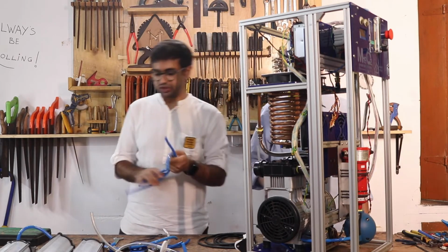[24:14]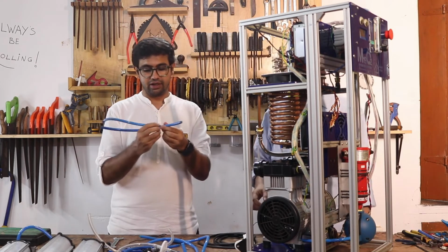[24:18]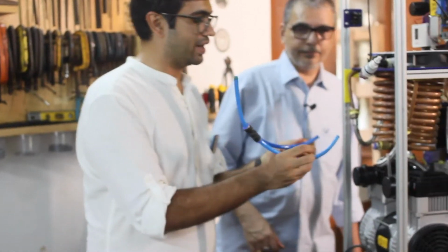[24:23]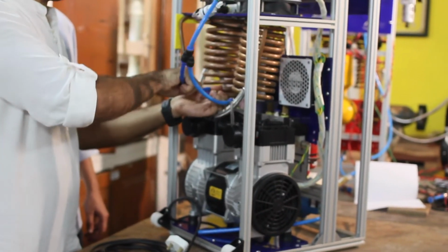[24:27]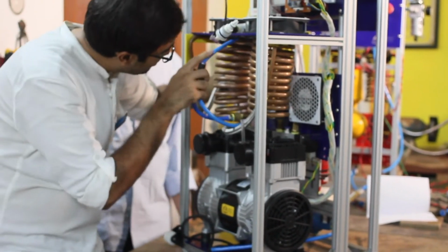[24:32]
The compressor is connected directly to the cooling coils. Now that the air is cool, it's going to go from here right to the back into a single line directly into the moisture separator. So we will be using this guy, which is a 1:2 converter, a Y converter. Connect this part right here. Okay. And this will be kept right over here.
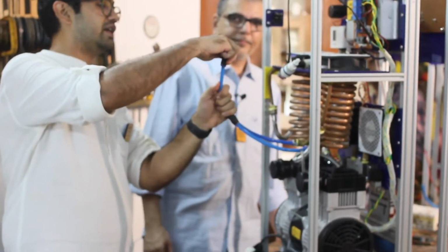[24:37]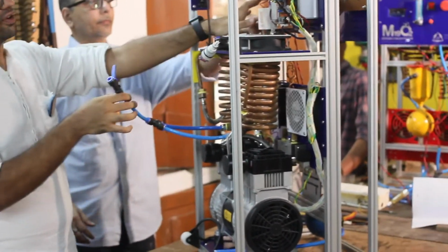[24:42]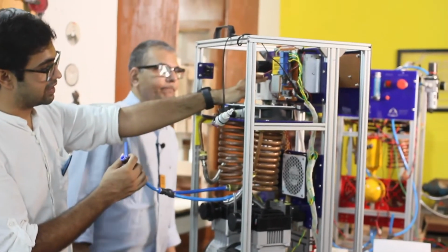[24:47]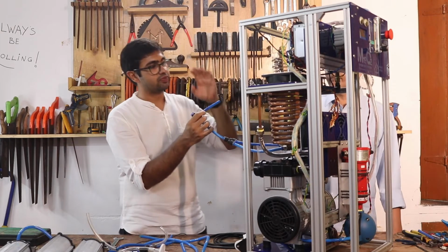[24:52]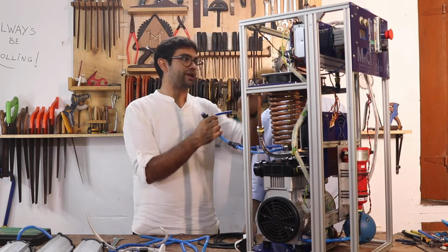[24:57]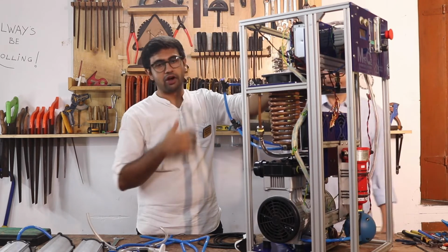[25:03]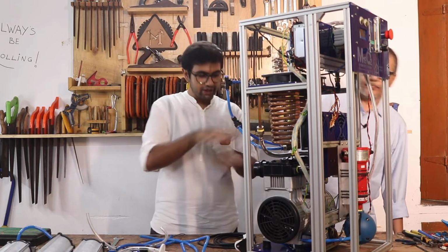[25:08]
Now after that, it's going to enter into a T. That T is going to take one line from here directly into the Danfoss pressure switch, which is basically going to cut off the entire compressor in case there is excessive pressure, more than 4 or 5 bar depending on your system. We've set it up to about 6 bar. So if there's pressure inside this entire system over 6 bar, the compressor will directly cut off.
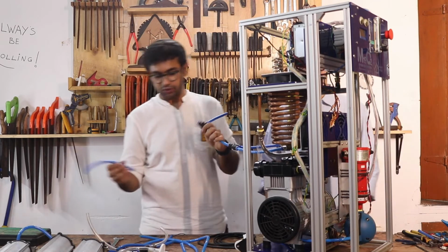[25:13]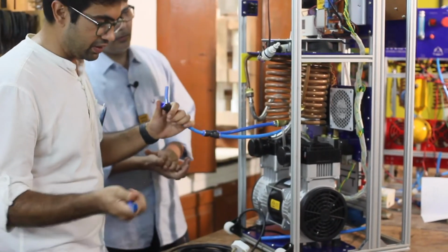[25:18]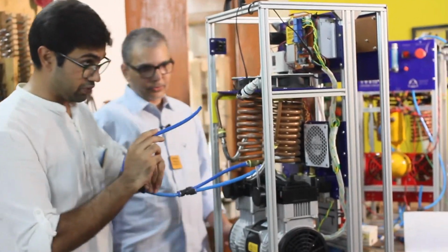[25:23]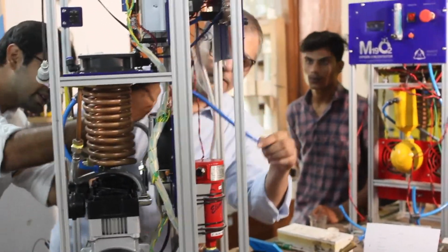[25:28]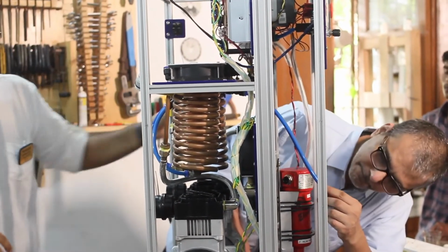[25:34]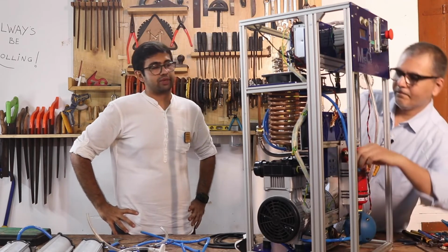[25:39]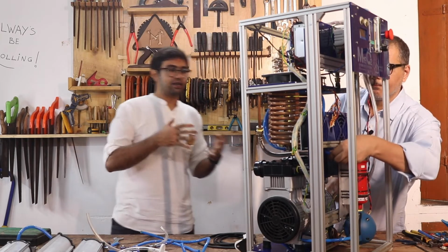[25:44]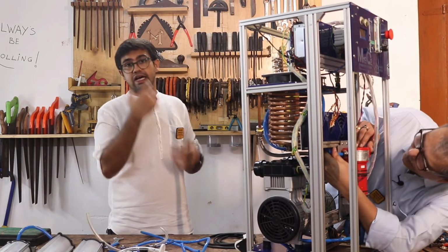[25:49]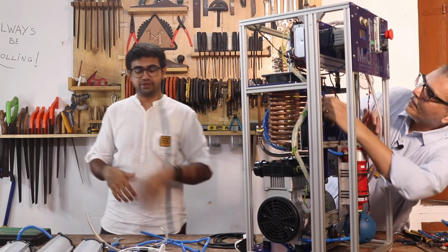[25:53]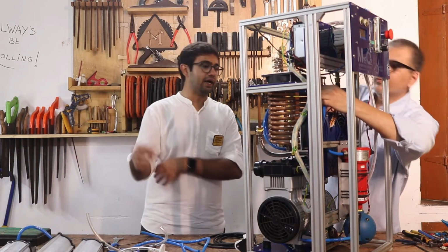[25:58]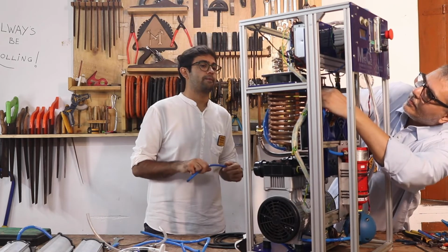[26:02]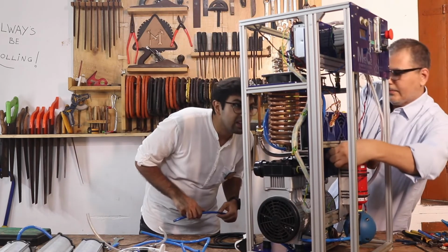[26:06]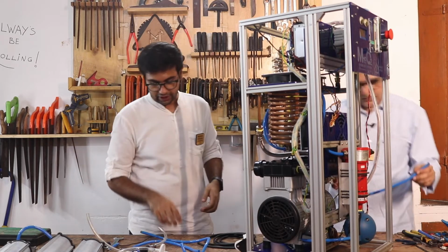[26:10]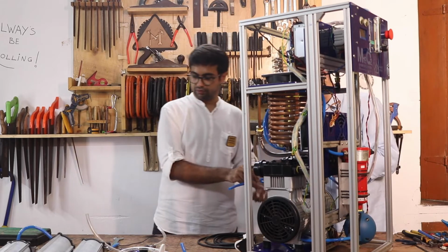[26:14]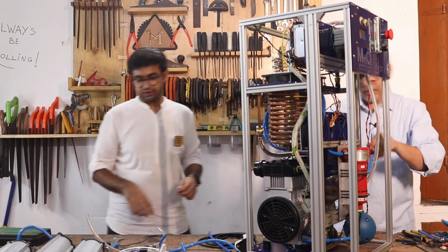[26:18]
Once it goes into the valve, it's gonna go into each of the sieves. So one line heading in from there. Ready? Yep. All right, you wanna connect the output? So this one. Actually, maybe I think it's this one. Or this one. Could be this one. Hold on. All right.
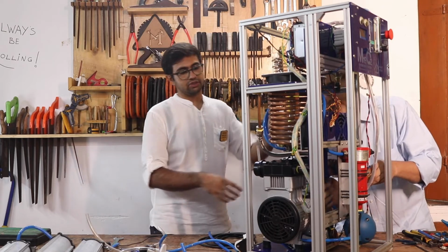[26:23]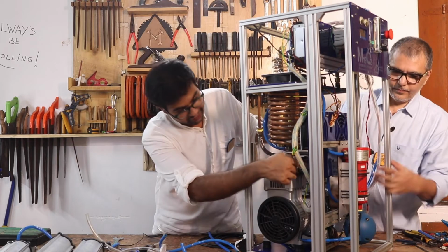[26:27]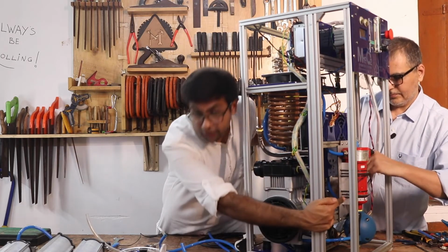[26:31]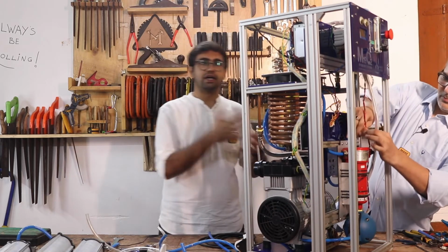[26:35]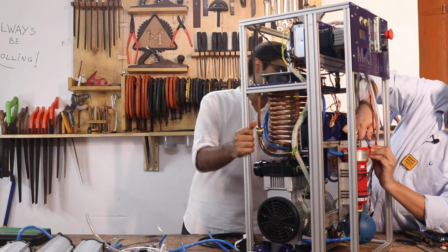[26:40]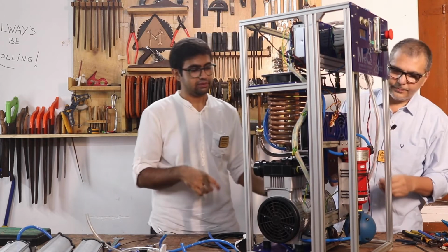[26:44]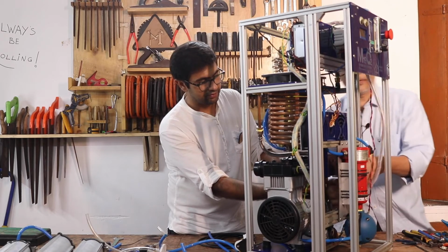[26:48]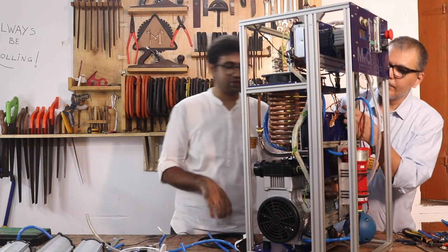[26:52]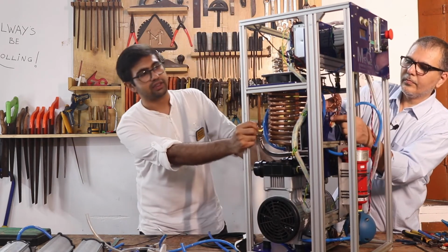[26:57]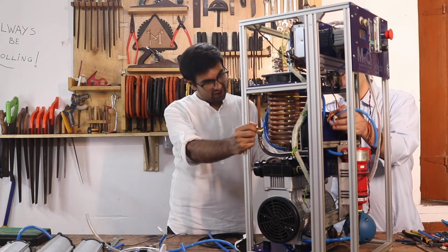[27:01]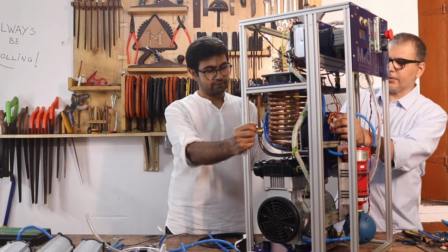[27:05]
Inlet first. So it's going directly into the inlet, which is right here, of the valve, and is connecting to the output of the moisture separator. Which is logical, right? You're removing the water and then putting it into the sieves via the solenoid valve. The inlet is on the top of it. Oh, sorry. Inlet goes into the top. So the inlet of the solenoid is on the top next to the silencers. And that's where it's going. Okay. I'm gonna push it in.
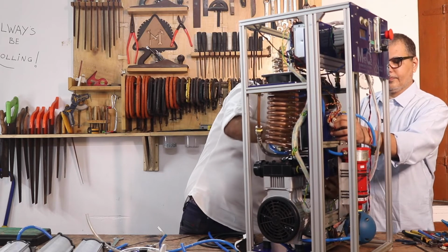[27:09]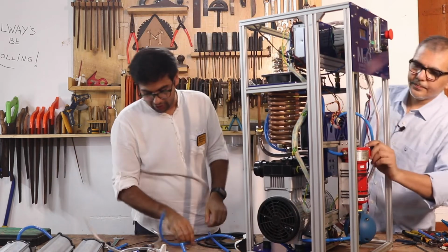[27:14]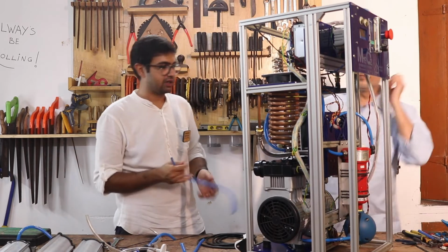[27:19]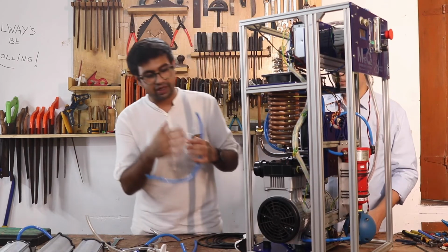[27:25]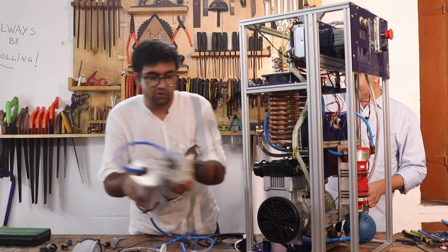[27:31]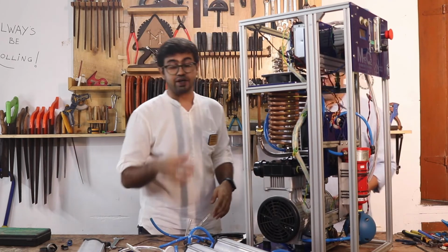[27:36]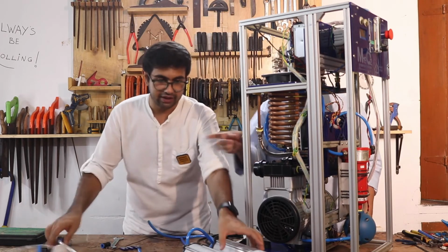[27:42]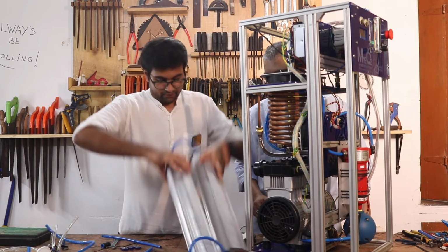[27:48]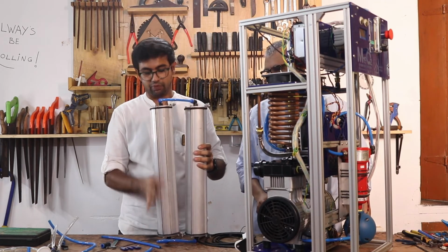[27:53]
All right. Okay. Once that is done, just make sure it's nice and tight and it doesn't slip off. Post that, the outlet of the solenoid valve, which is right about over here, is directly going to go. We'll fix that later, which we will put at the end, but I'm just keeping them over here because that's where this one is going. The output of the sieves is going to go into this, so I'll actually make that through connection. That Y connector, I'll make that connection also ready. So this is the output of the sieve, this is the input at the bottom.
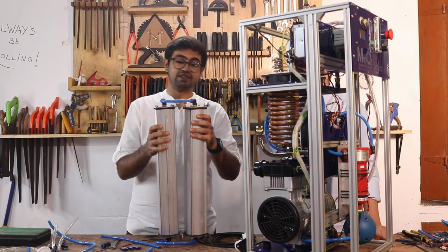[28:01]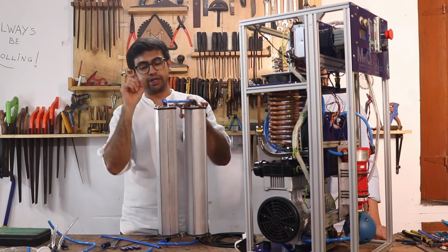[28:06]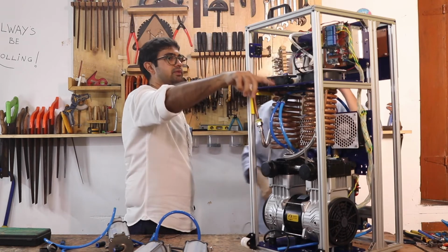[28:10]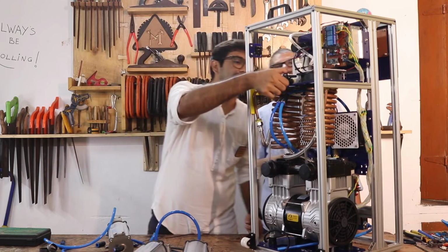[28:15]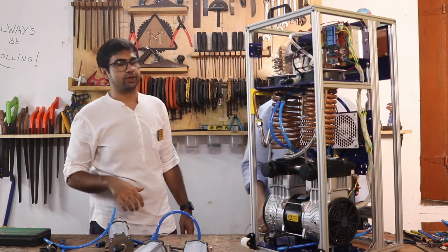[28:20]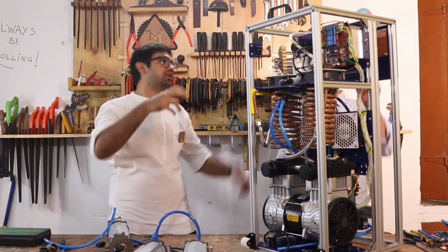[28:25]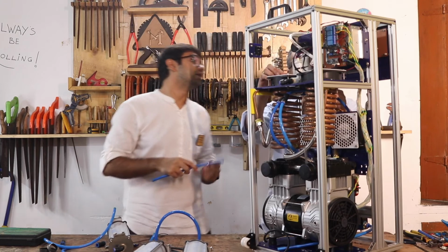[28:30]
To know exactly how to pack a sieve and all the other details about how to prepare your sieves and what is inside this, check out the sieve video and the documentation over there. That's it. What about the output? Bleeds out to the atmosphere. Okay, this part is just going to bleed out to the atmosphere, which is fair. We're wasting a little bit of oxygen over here to be able to capture and understand how much oxygen is going out. This part is now going to go into the output flow regulator. The flow regulator is right in the front, so we'll connect that now.
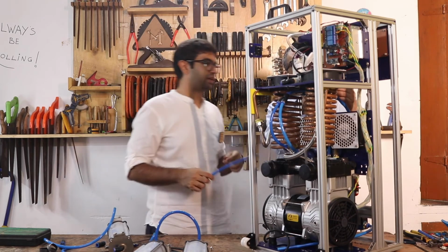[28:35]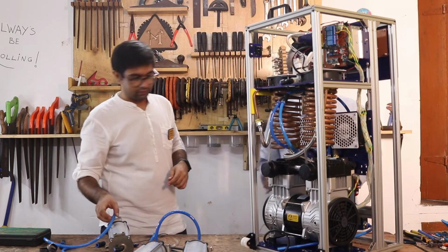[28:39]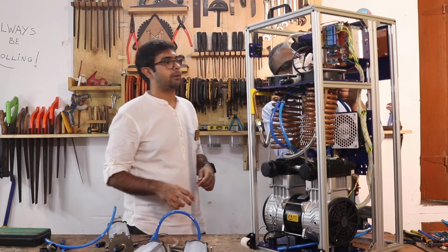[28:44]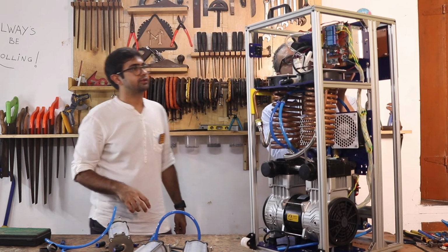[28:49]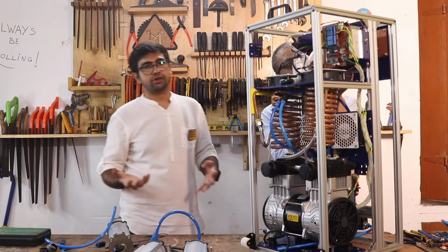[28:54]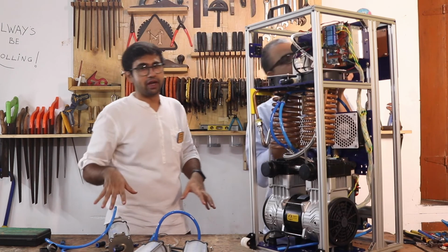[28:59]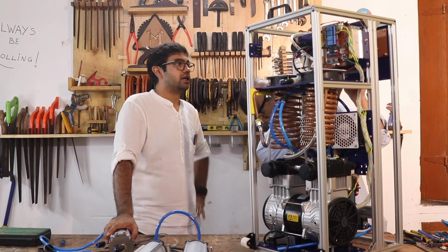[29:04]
So let's take it from down there, and then okay, this one has an orifice, so I don't need that. You can also easily follow the pneumatic diagram and figure this out. This part is pretty straightforward when you have it opened out. And then when you're trying to put it inside your machine, you'll know exactly what goes where once you have the oxygen concentrator working.